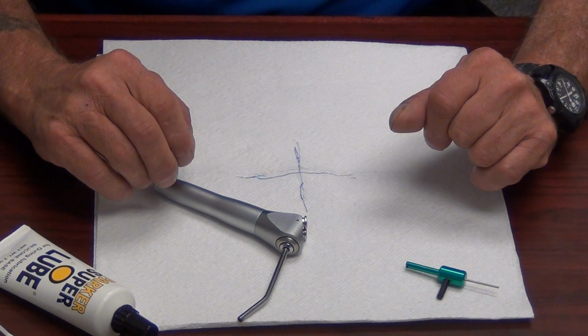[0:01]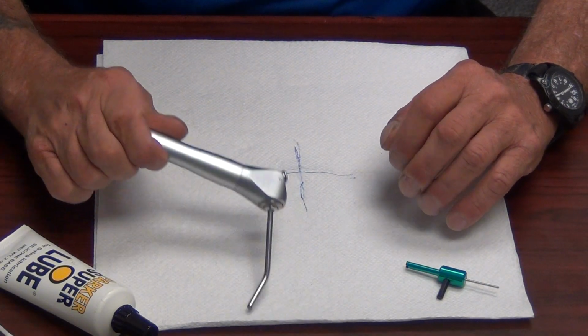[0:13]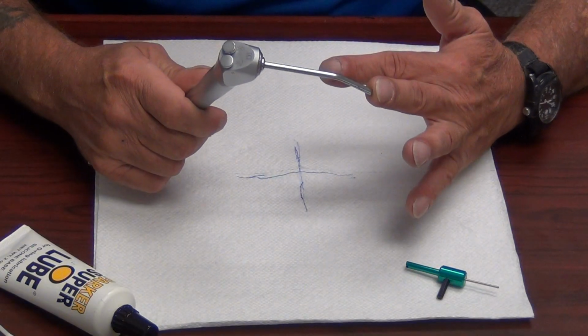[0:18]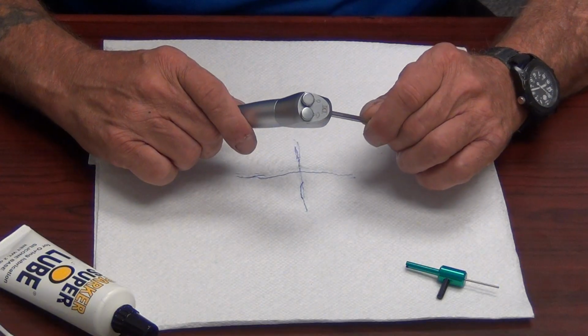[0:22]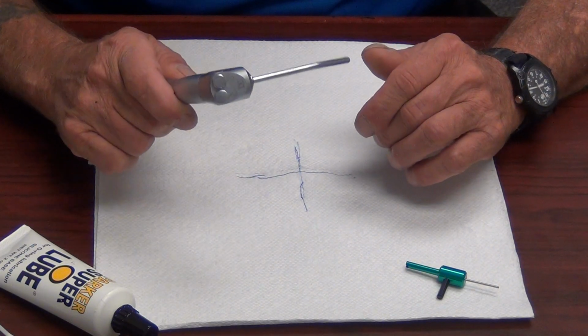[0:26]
Hey guys, today we're going to discuss the repair of the DCI syringe. DCI makes several syringes for several manufacturers, which means basically most of your syringe nomenclature is going to be the same, except for an A-dec syringe. We're going to do an A-dec syringe in a separate video. There are some unique characteristics of an A-dec syringe that are not characteristic of this syringe.
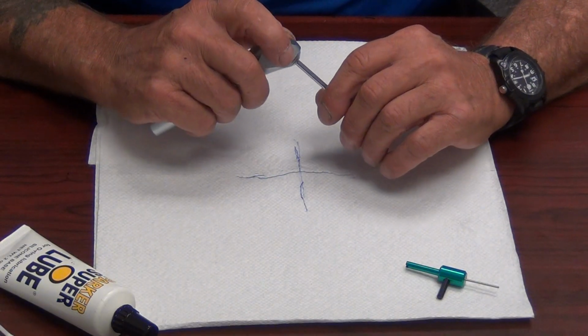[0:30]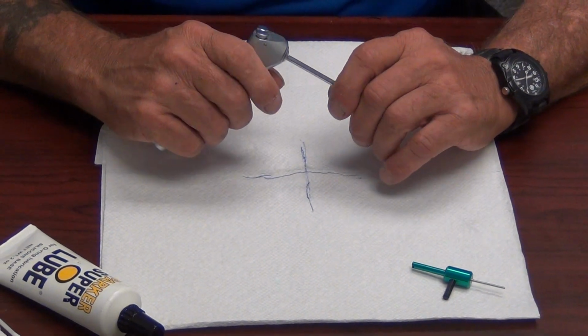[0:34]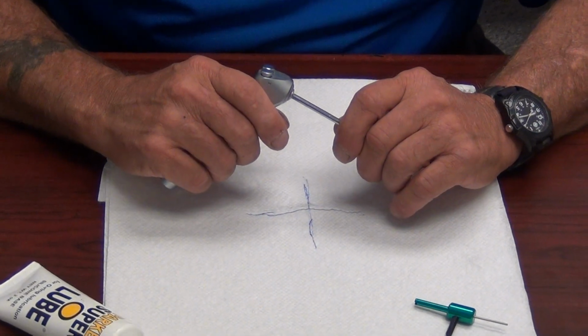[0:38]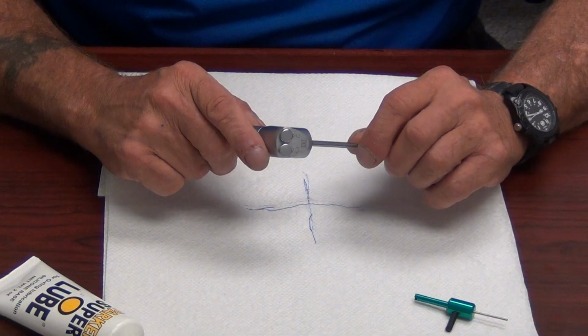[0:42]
This is important stuff, guys. I know technicians who have been doing it 10-15 years, and their syringe skills are severely lacking. I also know technicians who will not repair a syringe but sell a new syringe. If I was the doctor, I would not buy a new syringe when that syringe could be rebuilt. Actually rebuilding the syringe instead of replacing it is a good way to score some points with the doctor. The syringes are made to be repaired.
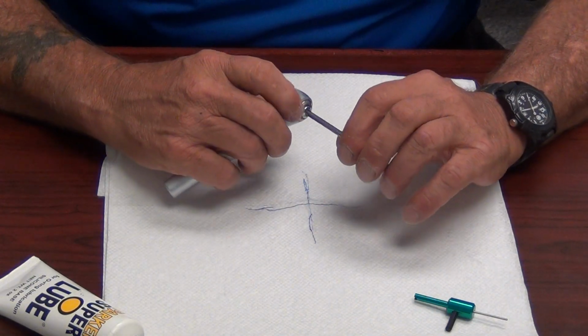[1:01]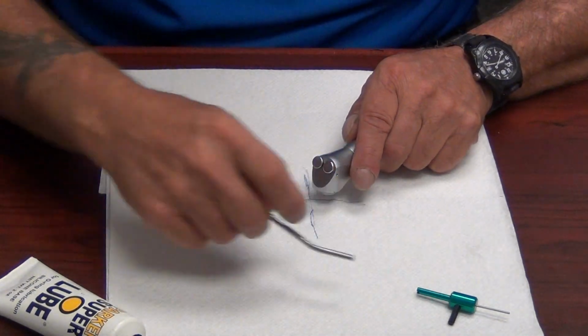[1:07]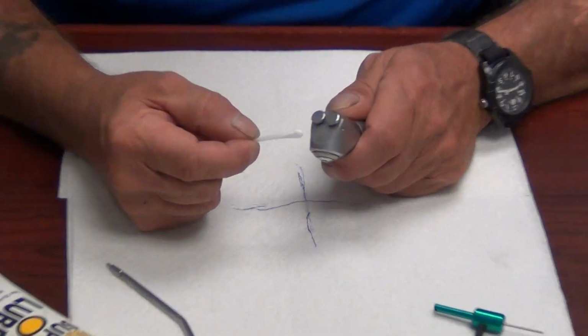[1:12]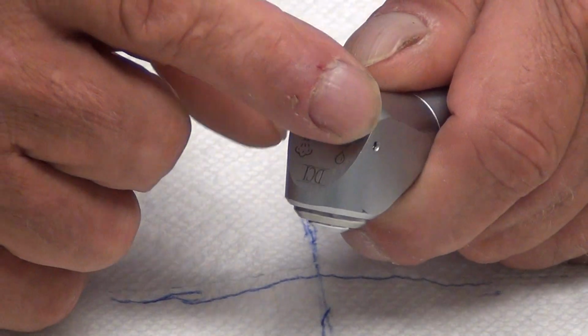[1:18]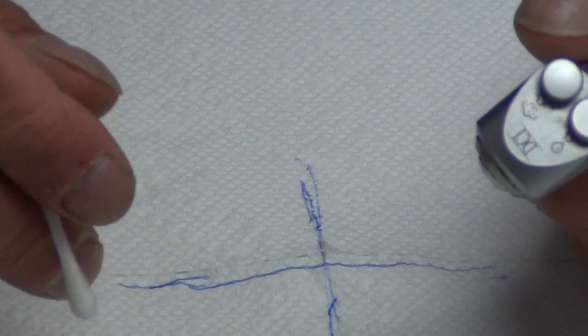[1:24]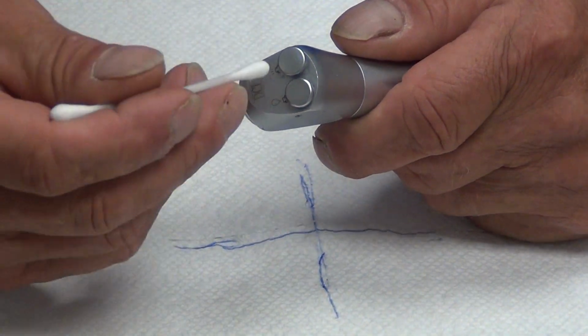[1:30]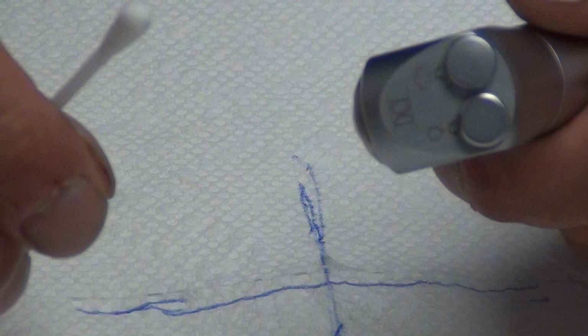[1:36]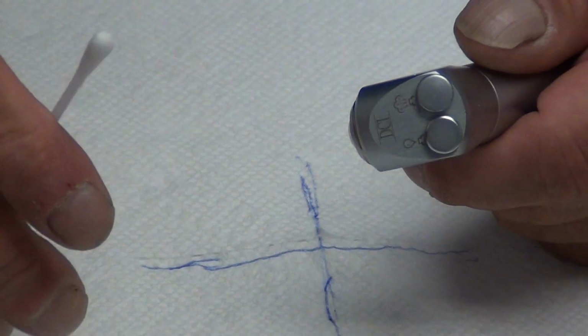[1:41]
The only indication that you cannot repair a syringe is to examine the head of the syringe closely. Look for any dents or dings in the head of the syringe, especially around the buttons, that could impede the buttons or make the buttons stick. If the syringe is dropped, which happens quite often, when they miss putting it in the hanger on the unit and it ends up on the floor, it will actually dent the head of the syringe. The dent will reflect in the button port and will make the syringe inoperable. That should be the only time you sell a new syringe. In case the doctor just out and out requests a new syringe, by all means put one on.
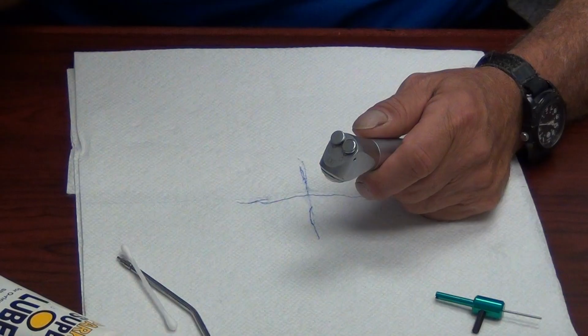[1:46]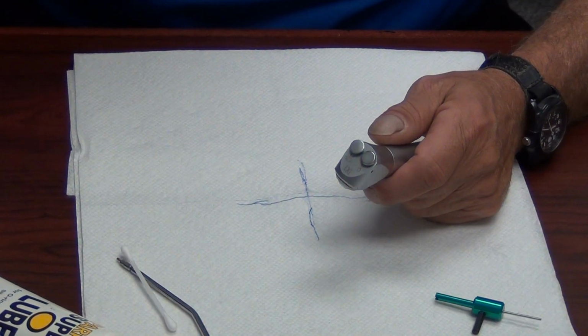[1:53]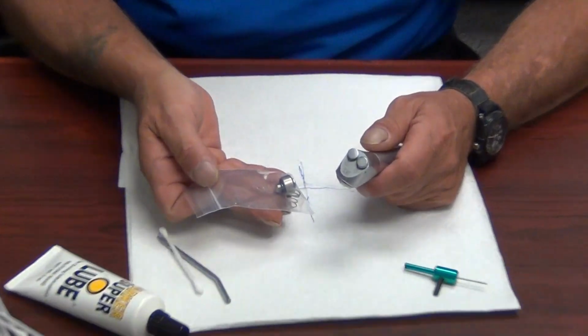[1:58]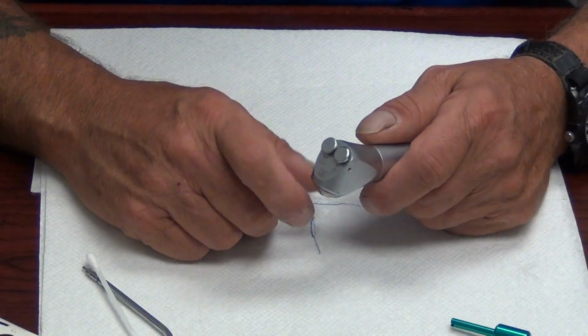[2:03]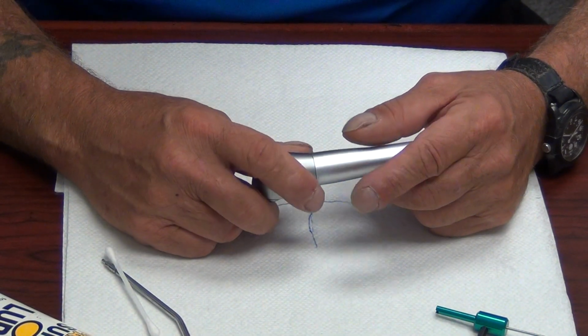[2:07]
You should stock some basic syringe parts: the syringe repair kit from DCI, which is part number 3066, and the Quick Connect tip holder assembly. These items should be stocked, guys. In the event that you don't have these when you have a free service to do, don't worry. If you've got a syringe in your truck on your delivery unit, you can actually use the parts off of that syringe to repair this syringe. So no need to panic.
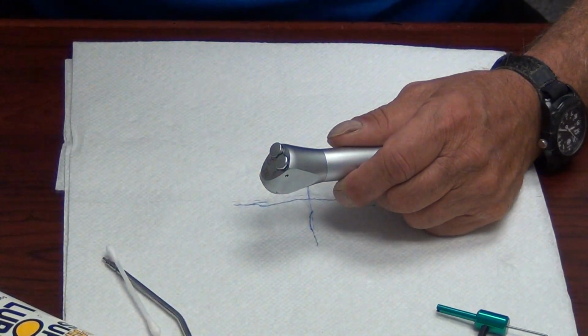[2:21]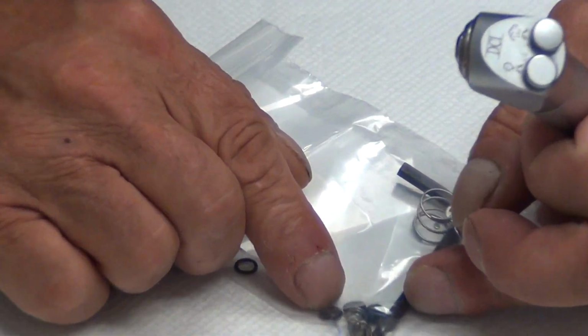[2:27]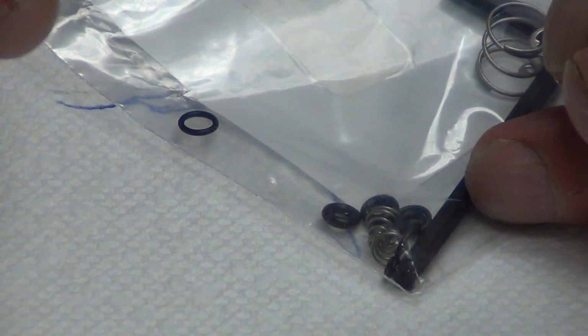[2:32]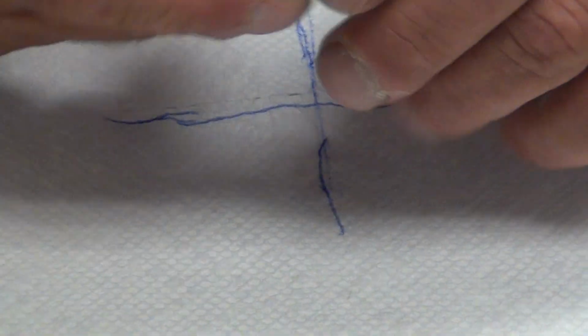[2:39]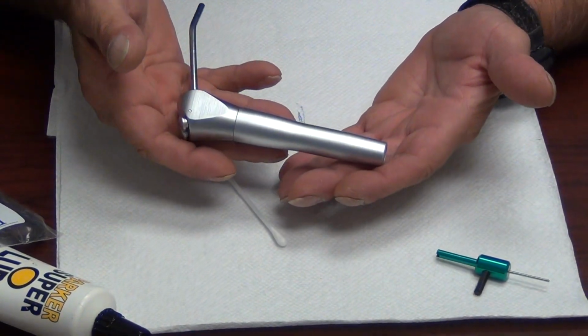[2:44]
Also, most of these O-rings, except for a few examples, are available in your DCI O-ring kit. Now, we're not going to get into the specifics of actually putting O-rings on the button. We're going to replace the cartridges and do it the basic thinking man's way. For convenience in the video today, we have already removed the syringe from the delivery system and left the tubing on the delivery system. There's no need to remove the syringe during your actual service. You can leave the syringe attached to the delivery system.
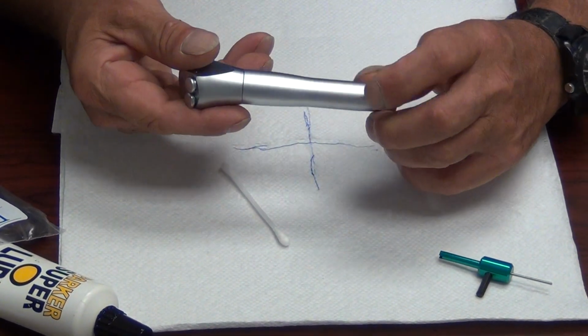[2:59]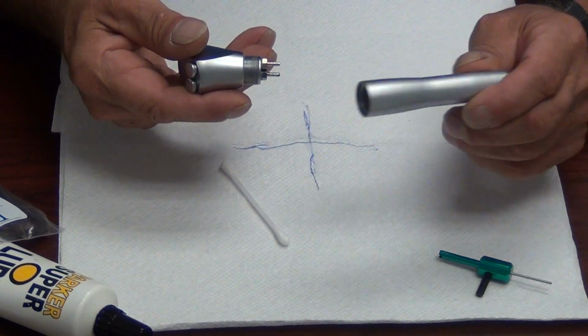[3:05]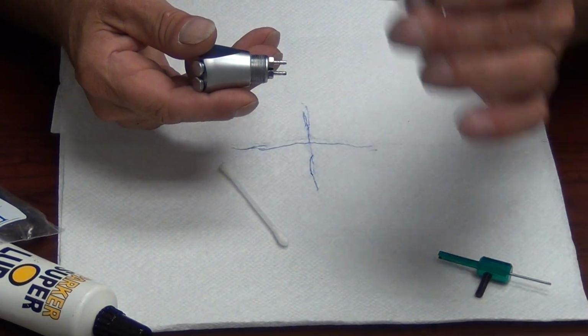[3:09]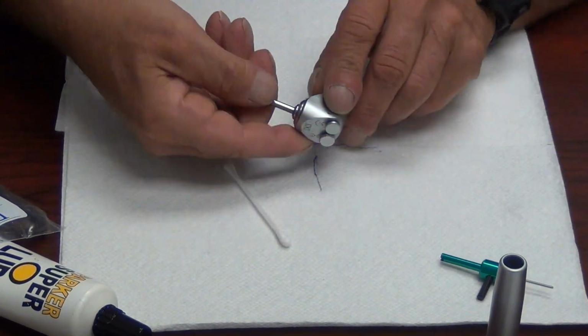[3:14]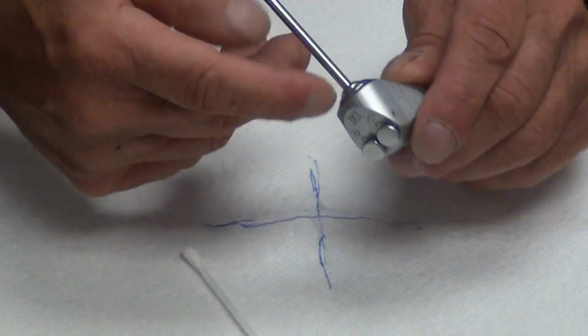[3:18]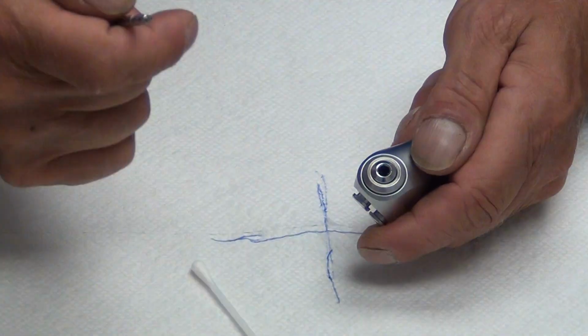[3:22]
First thing we're going to do is unscrew the handle. The syringe has definite parts. When you call me asking for help, please remember and make note of these parts so we can all be on the same page. This is the handle, obviously. This is the syringe head, for obvious reasons. These are the syringe buttons and the tip holder. Tip holder, not the tip.
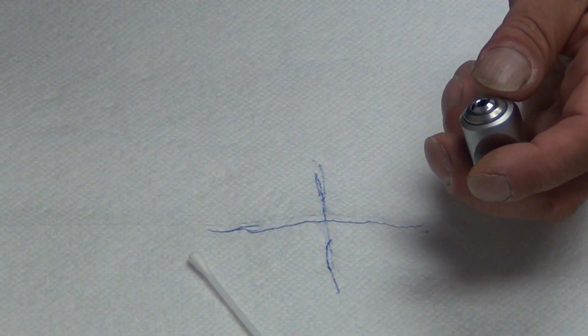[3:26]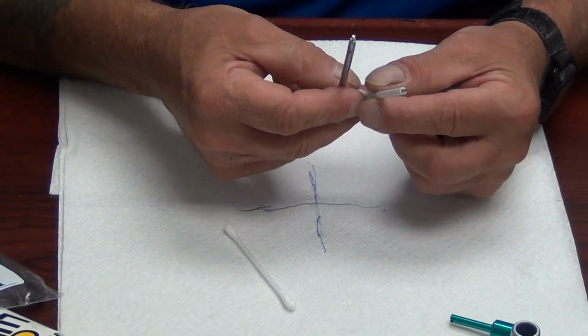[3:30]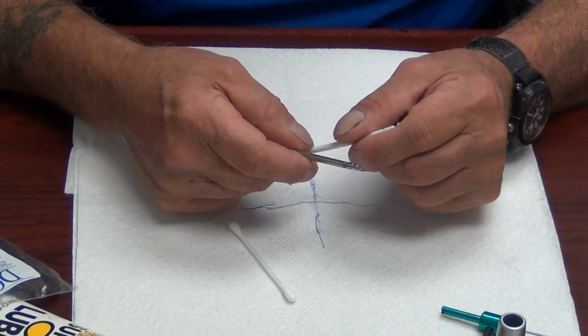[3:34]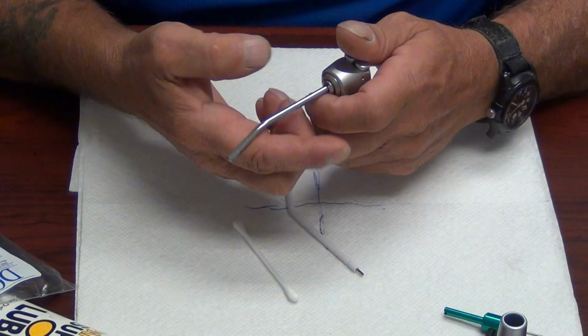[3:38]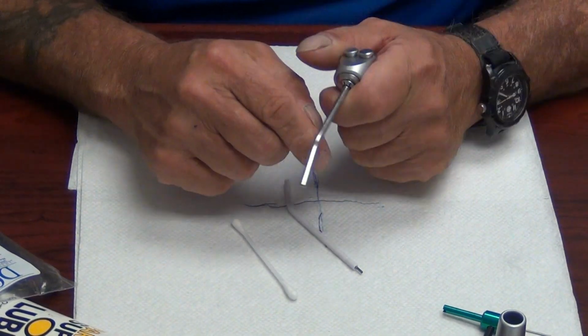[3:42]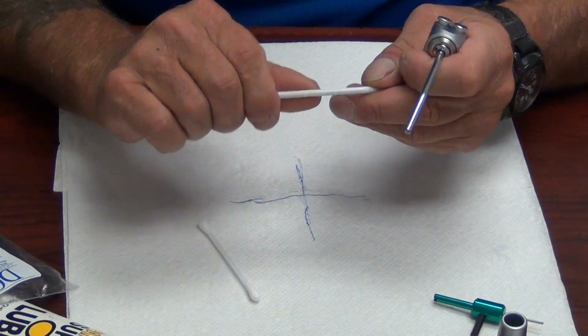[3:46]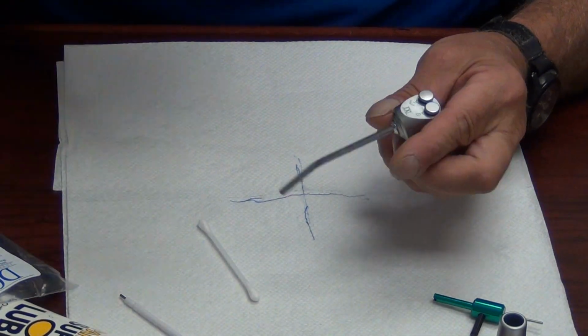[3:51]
This is a tip. You'll see a couple of different kinds of tips: plastic tips and metal tips. Both are acceptable. A plastic tip does not perform as well as a metal tip because the doctor and the hygienist use the tip to retract the cheek, gum and lip while they're doing the procedure. Plastic doesn't offer that much rigidity to retract with. So we're going to remove the tip and set the tip aside.
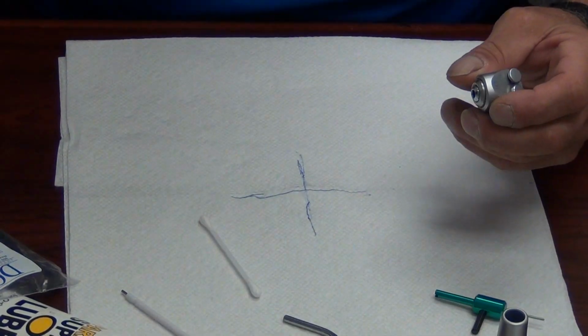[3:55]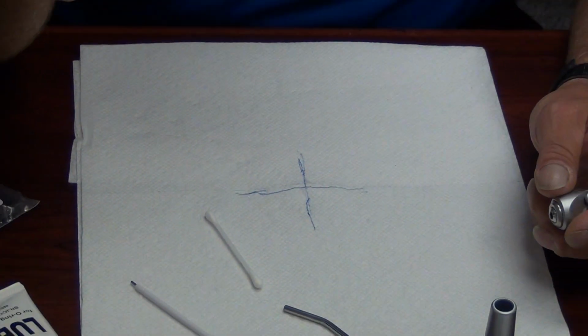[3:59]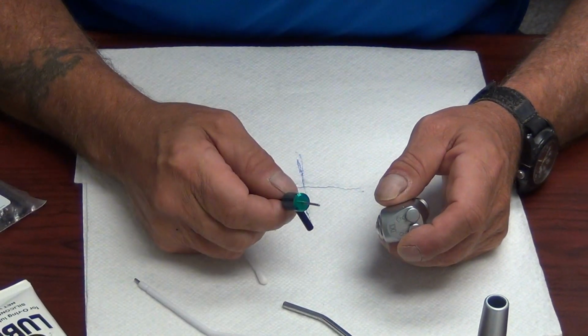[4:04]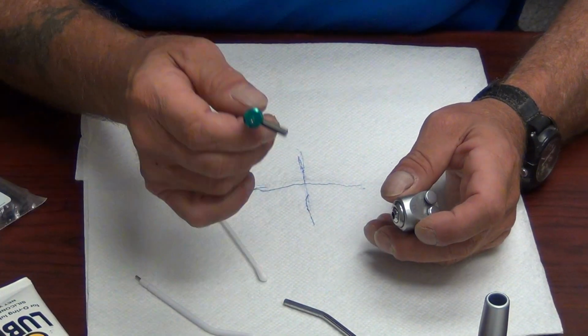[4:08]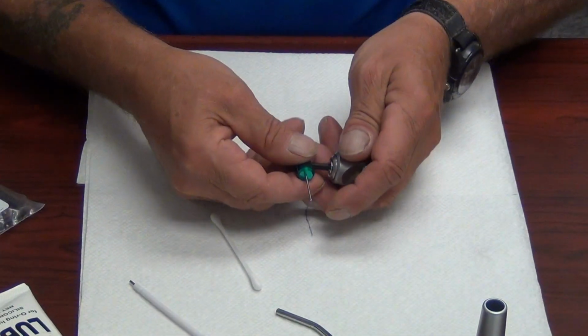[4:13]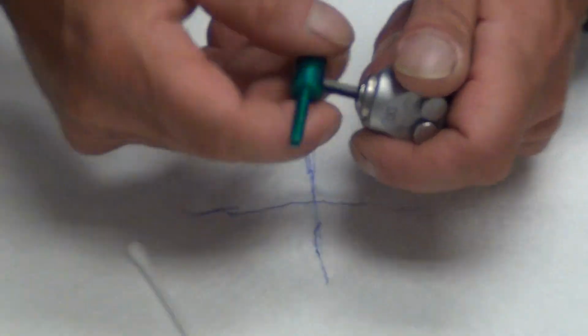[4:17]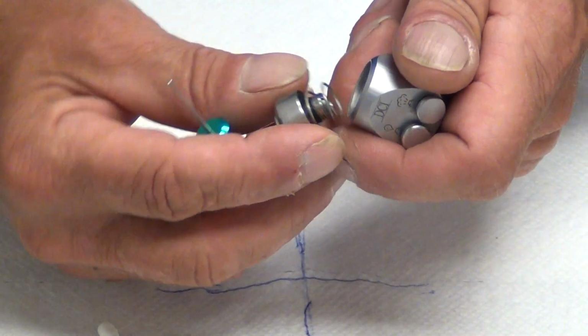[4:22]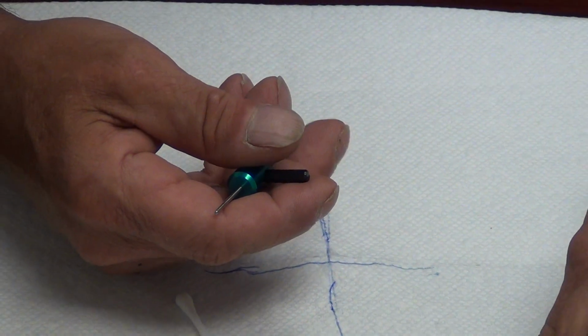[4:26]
We will get our syringe tool, which is available from DCI. It's part number 9287. This is an indispensable syringe tool, guys. You really need this. With the Allen wrench attachment on the front, we're going to remove the tip holder. Counterclockwise, we're going to unscrew very gently and set the tip holder aside with the retainer spring.
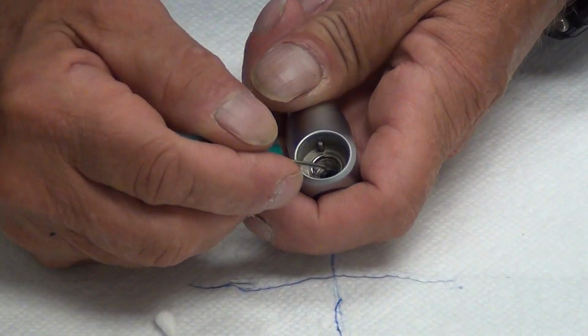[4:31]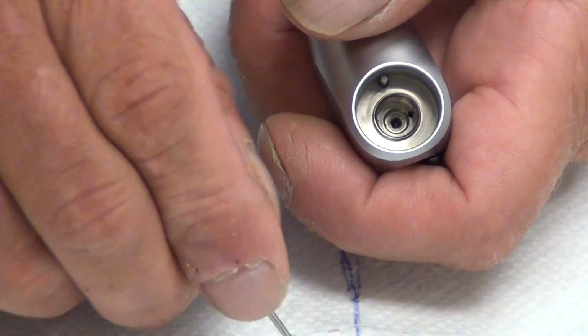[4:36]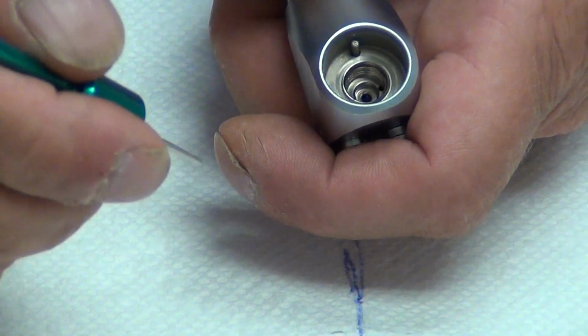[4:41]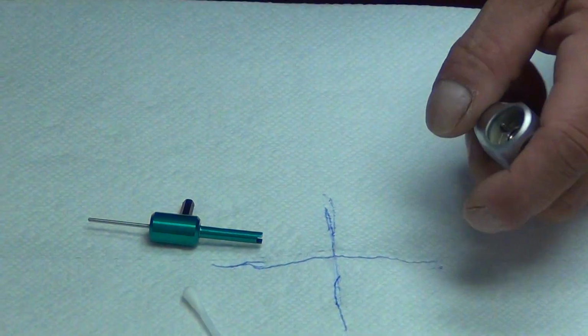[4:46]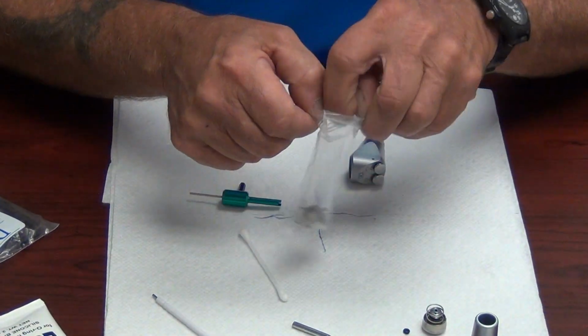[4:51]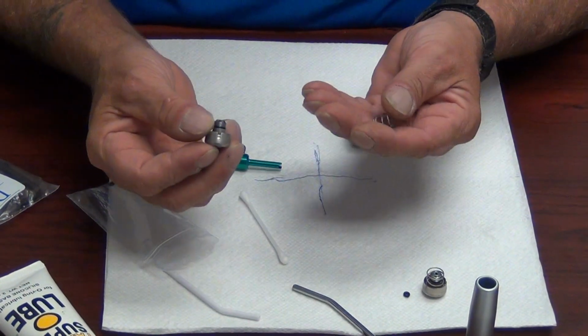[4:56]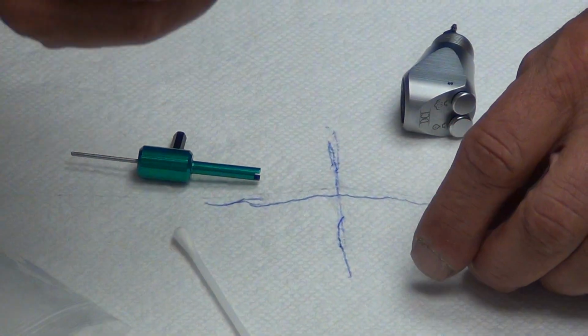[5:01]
As you look into the inside of the syringe, there's a small O-ring, as illustrated, that fits into an indentation. This O-ring is very important when reassembling the syringe, guys. We'll take our new tip holder. The O-rings aren't replaceable in the tip holder itself, by the way, guys. You have to replace the whole tip holder when you have this type of syringe.
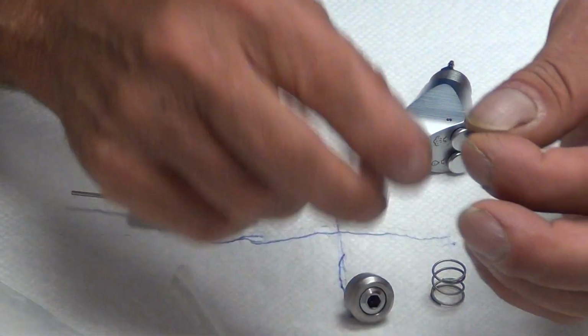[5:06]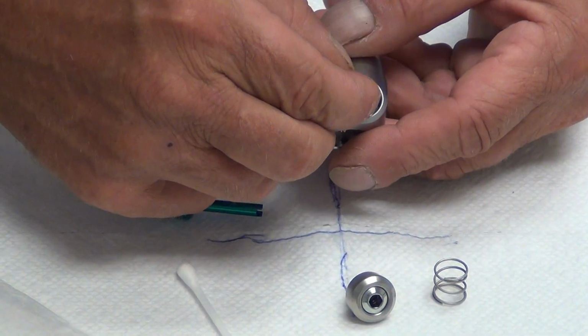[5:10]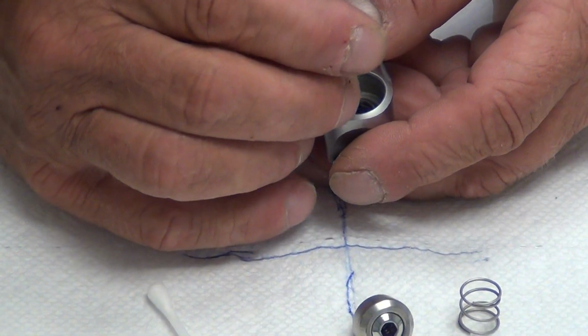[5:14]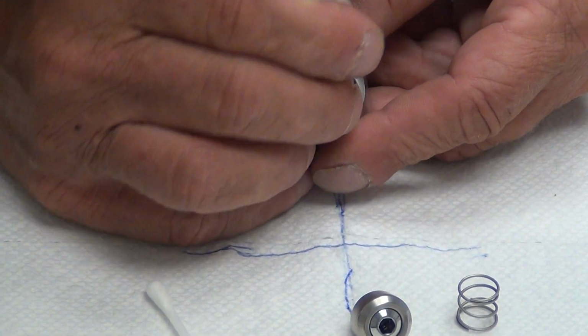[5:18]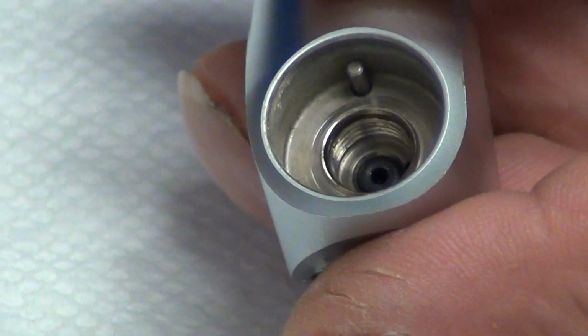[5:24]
Taking your O-ring that comes with your new syringe holder, drop it down into the syringe using the blunt end of your syringe tool. Press it down into the orifice as so. Make sure you get a good press on it. You can use your Q-tips. Guys, have some Q-tips laid out.
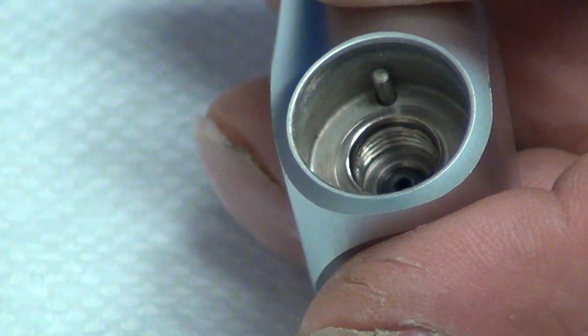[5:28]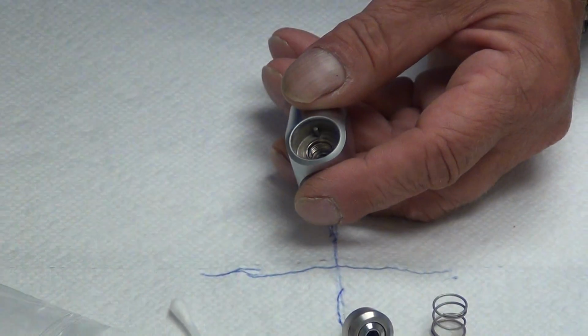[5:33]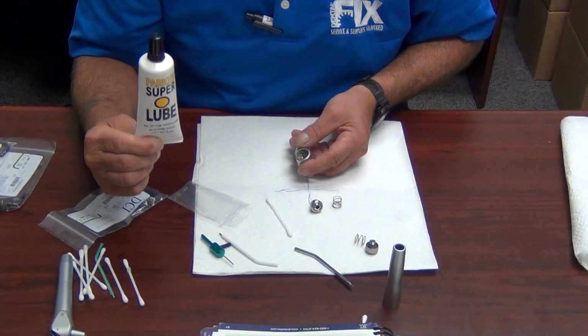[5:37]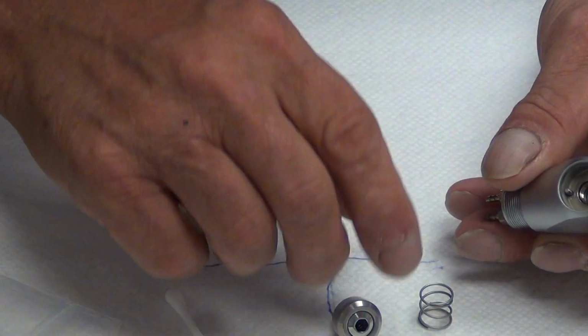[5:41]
And also some O-ring lube. Do not use Vaseline. Do not use lithium grease. Do not use silicone grease. Use O-ring lubricant only. We've replaced our O-ring. This is a very important part.
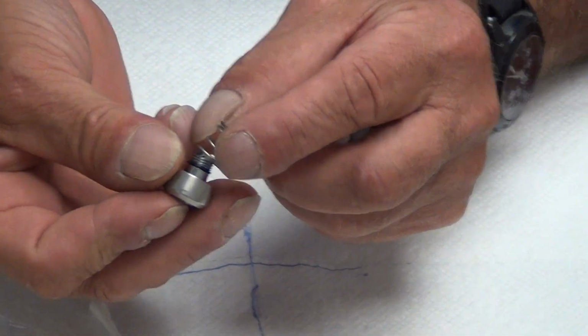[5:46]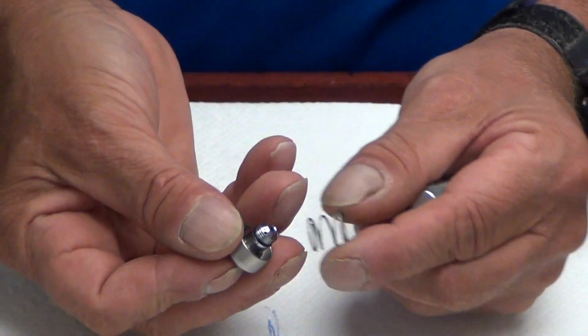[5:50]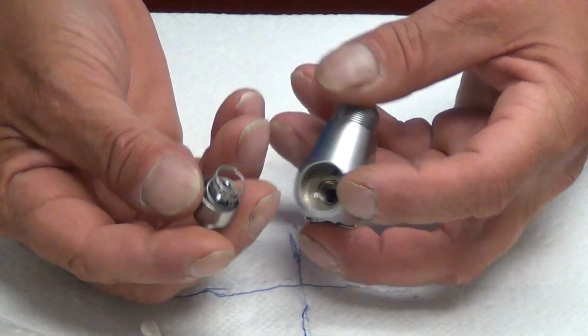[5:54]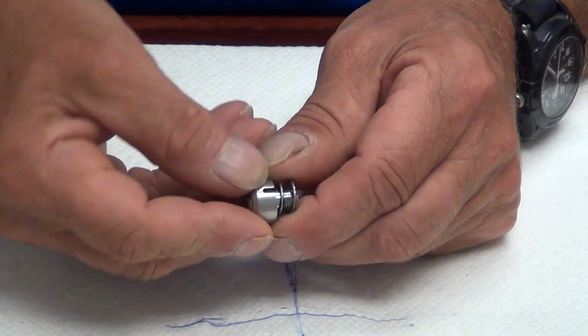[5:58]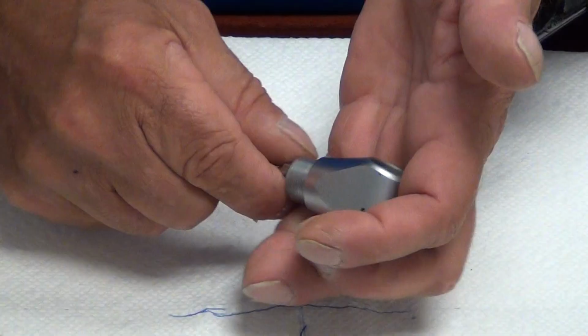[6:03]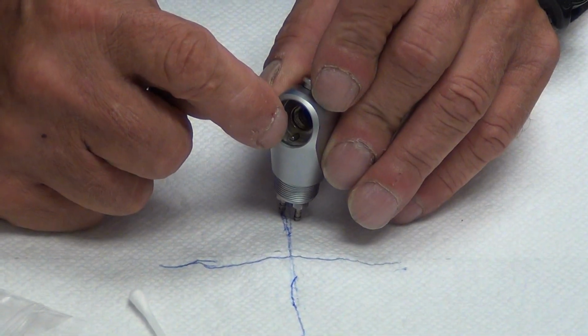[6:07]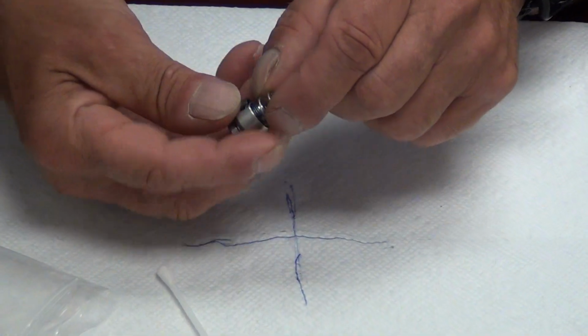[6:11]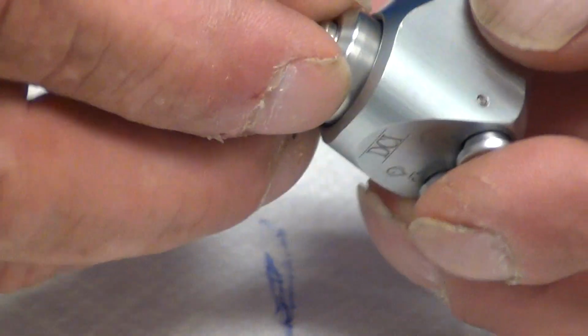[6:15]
Make sure your spring is inside of the new tip holder and collar assembly, like so. You'll see a notch in the new tip holder assembly. A slight cutout is illustrated right here. And you'll also see a post coming out in the syringe. This notch must align to that post, which is at a 6 o'clock position.
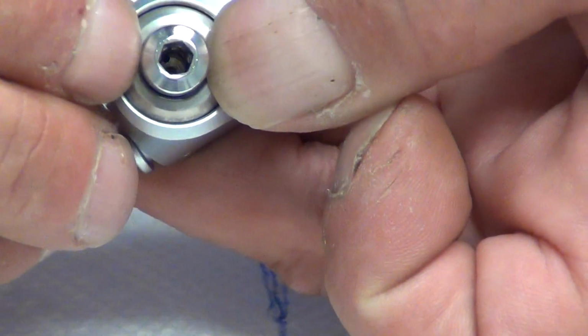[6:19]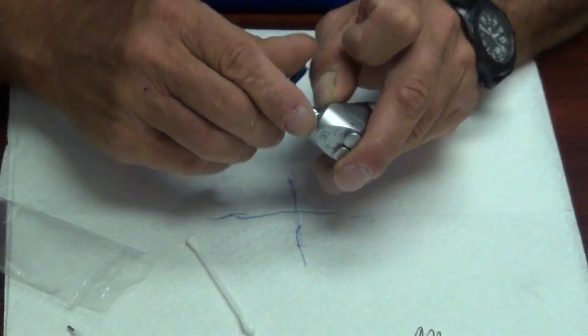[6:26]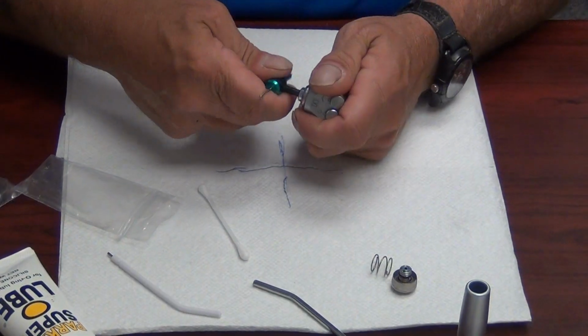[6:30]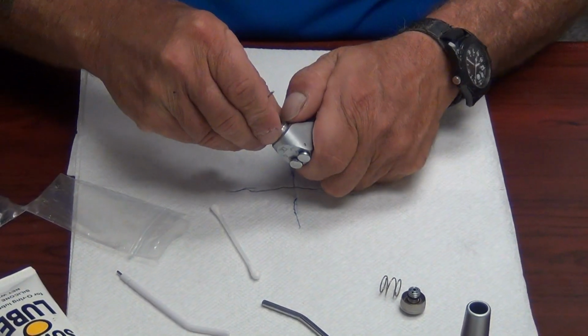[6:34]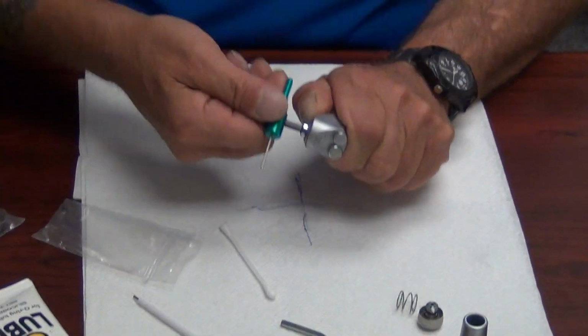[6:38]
So doing that, we will retract the outer ring, take our tool, and being very careful while we're retracting that, we are starting straight and not cross-threading. If we cross-thread this, the guy does have to buy a new syringe. We'll tighten it down securely.
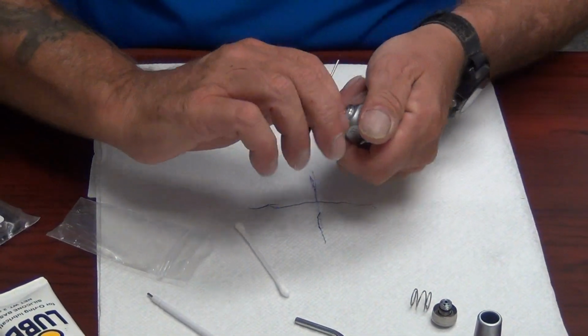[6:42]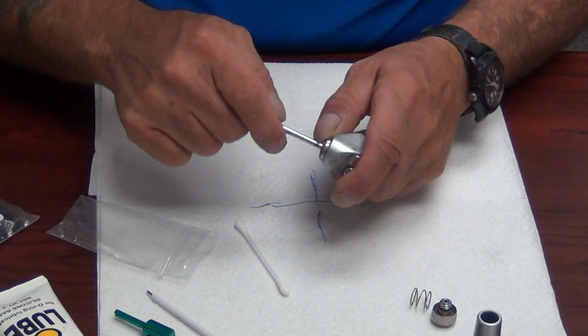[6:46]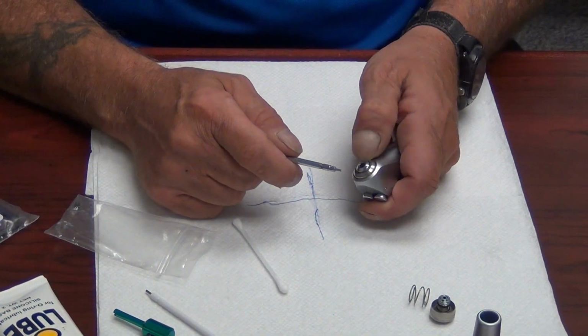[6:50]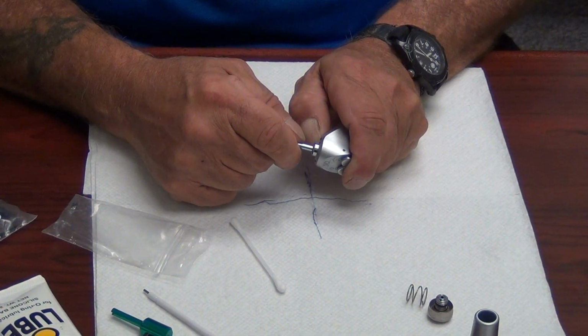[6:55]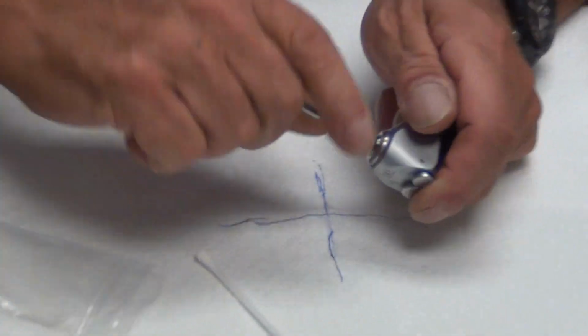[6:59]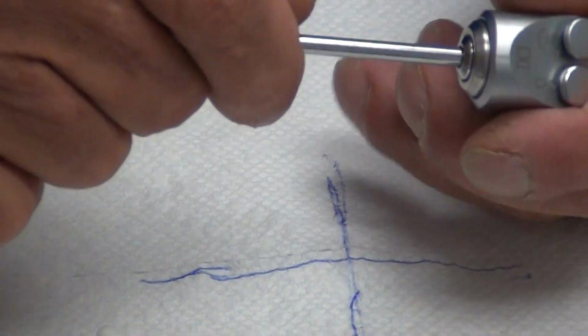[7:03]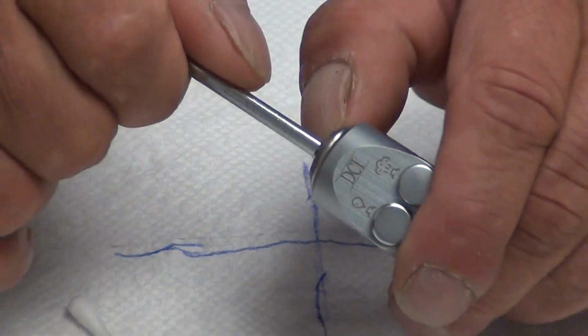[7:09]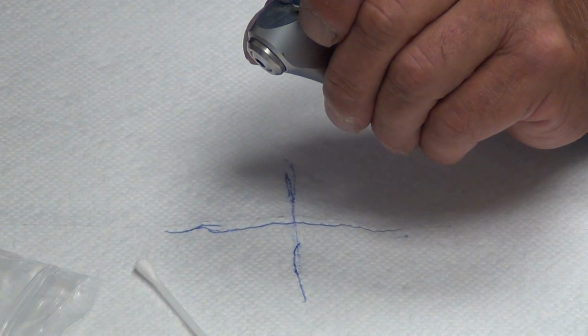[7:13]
Reinstall the tip. Guys, to install the tips on these, you push the outer ring like so. Put the tip in till it snaps. Release the outer ring, swivel the tip 360 degrees. And the tip process is completed on the syringe rebuild. We'll remove the tip again and concentrate on the buttons.
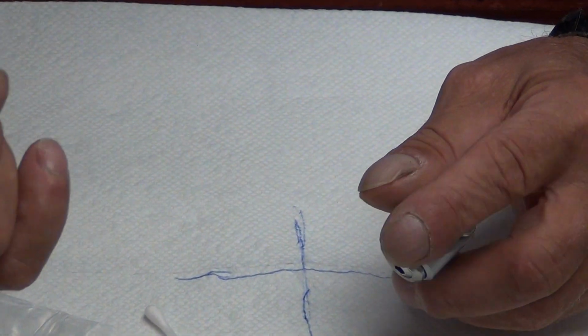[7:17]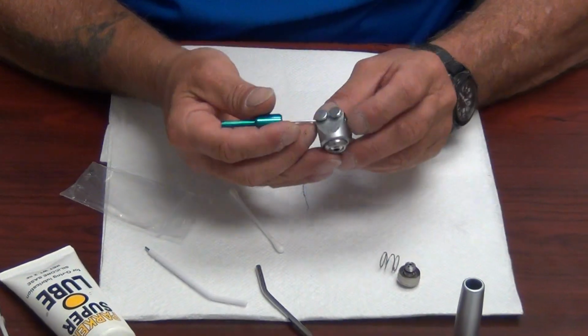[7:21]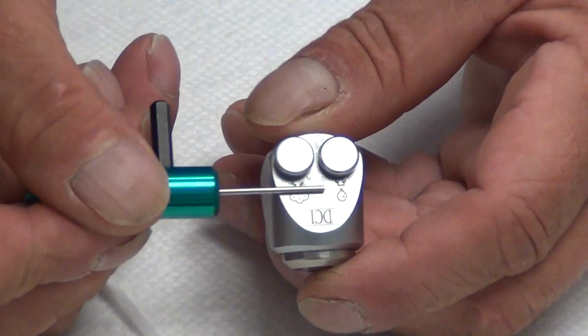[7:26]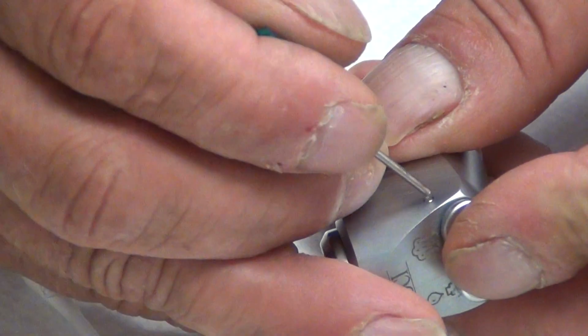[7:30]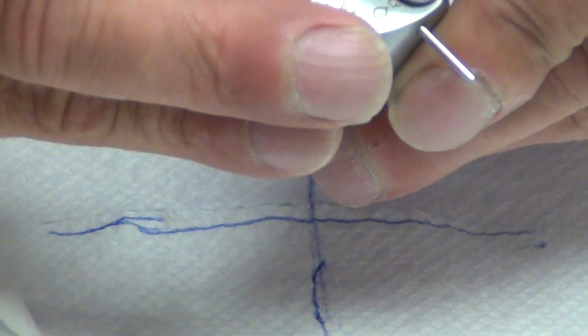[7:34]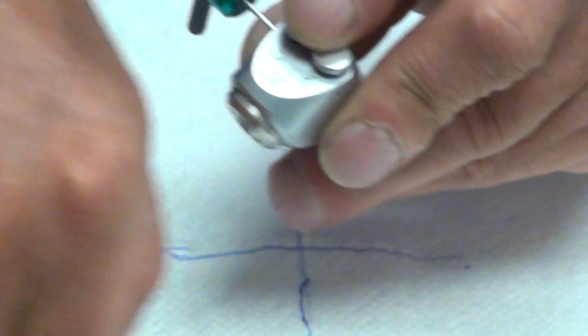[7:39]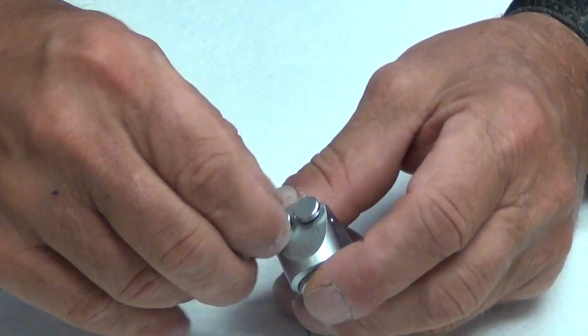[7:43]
Again, we have our handy dandy DCI syringe tool. These syringe buttons are retained in by means of a pin like so that goes through the syringe and holds the cartridges or the buttons in. So what we're going to do is extract the pin. If you'll notice, our tool has the exact right size to extract the pin, and lay the pin aside and pull our tool back out, starting with one button at a time.
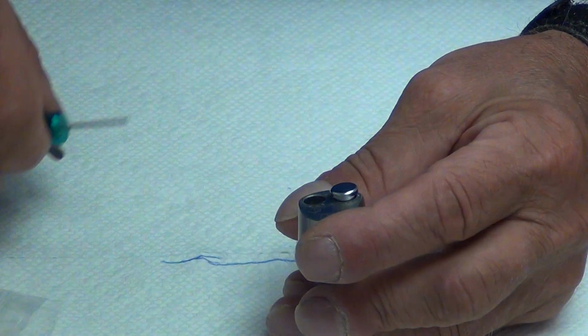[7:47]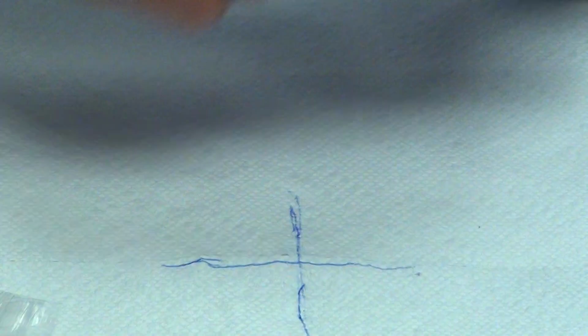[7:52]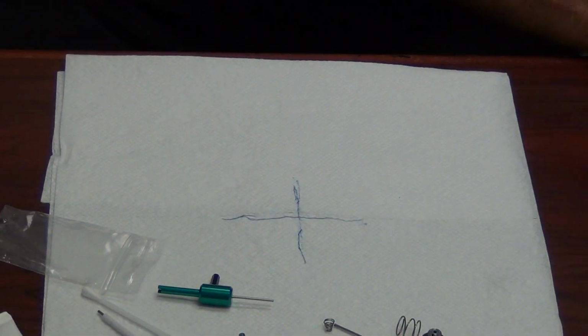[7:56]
We will remove the button and the spring and set them aside. Sorry guys, I had a button get away from me. It'll get away from you too, so be careful.
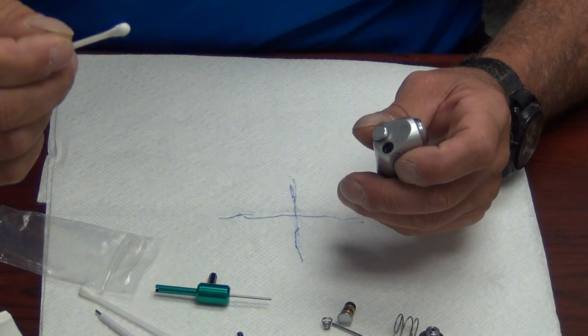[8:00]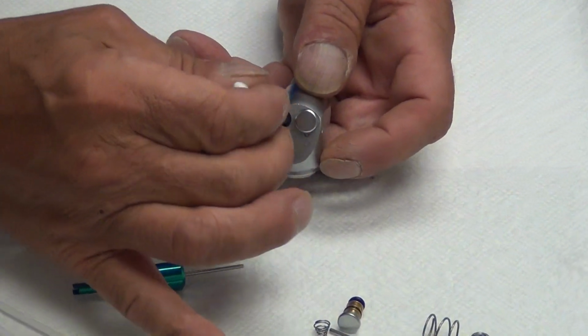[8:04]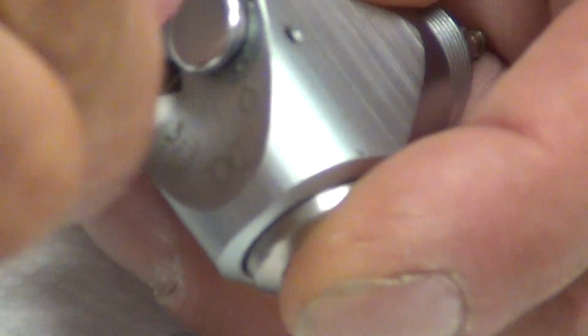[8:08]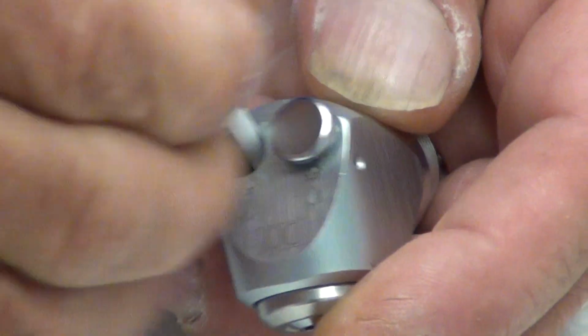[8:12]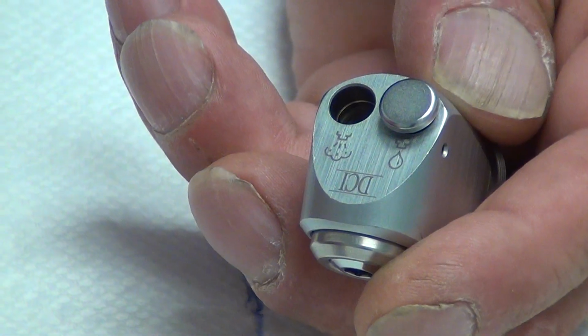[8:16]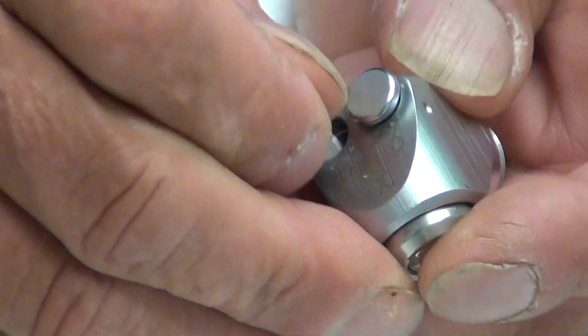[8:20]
Now with our Q-tips, we want to clean the syringe port. Give it a nice scrubbing and wipe down, because disinfectants get in here. See, disinfectants, debris, glove dust, any number of things can get in the syringe.
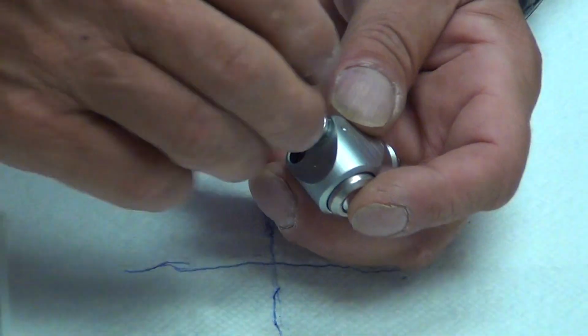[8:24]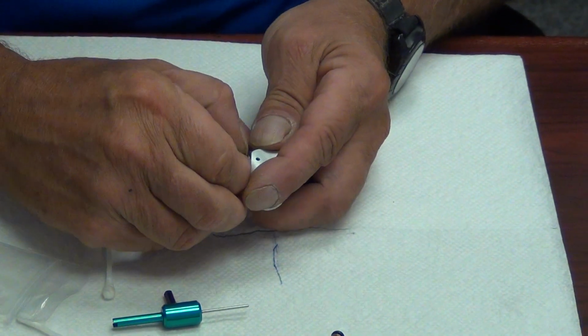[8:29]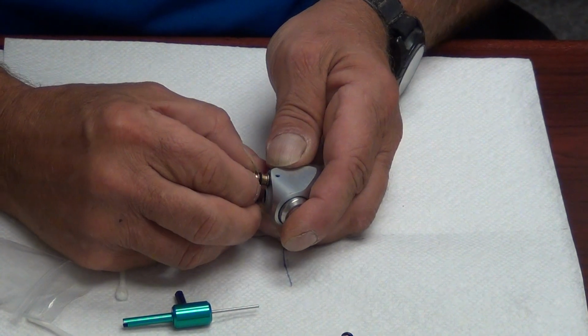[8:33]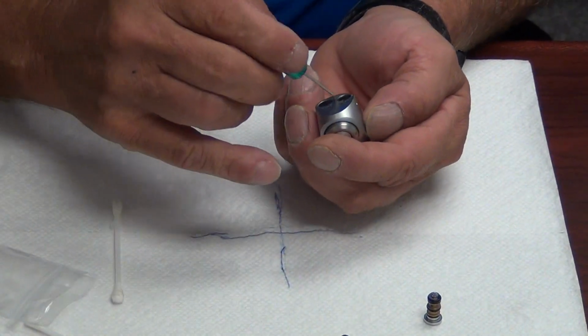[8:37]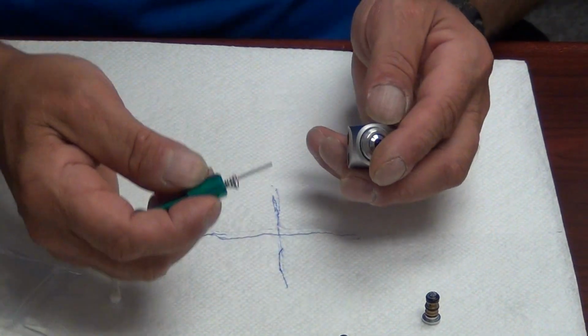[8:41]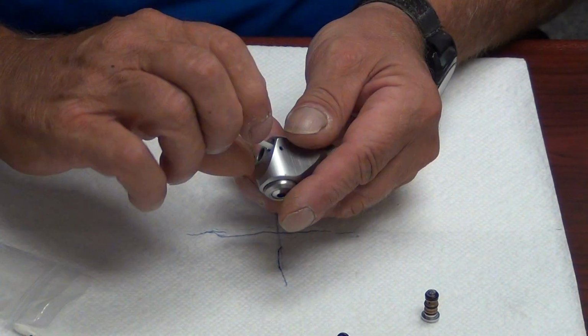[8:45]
We're going to remove our second button and set it aside. Very gently, luxate, and pull. Set it aside, and we're going to remember to remove our conical spring, and we're going to repeat the process on the water side.
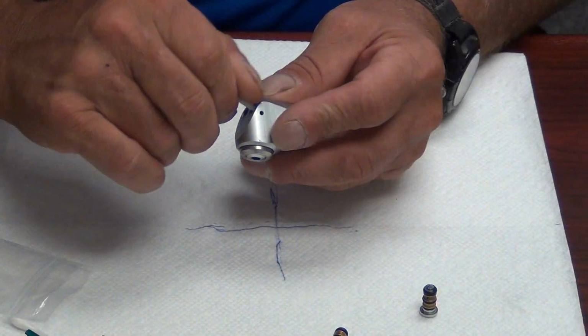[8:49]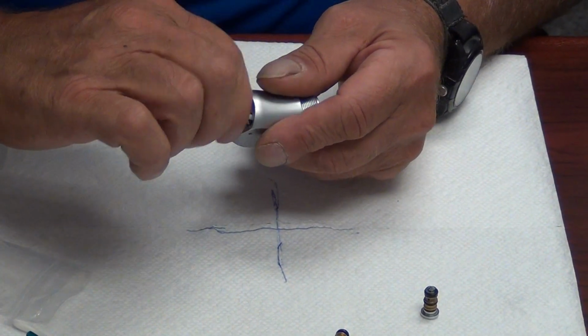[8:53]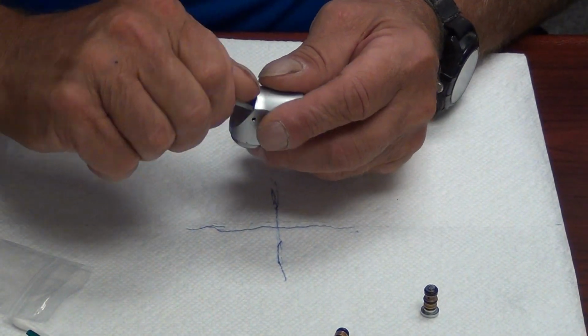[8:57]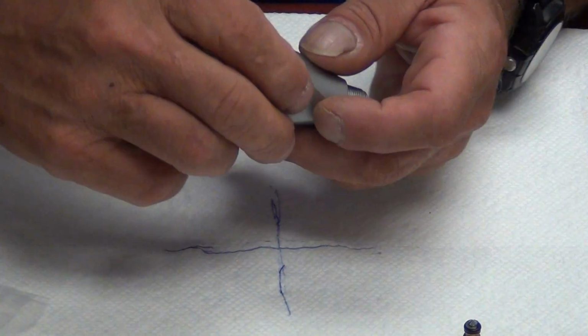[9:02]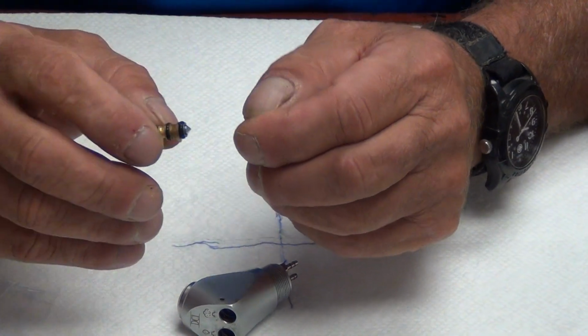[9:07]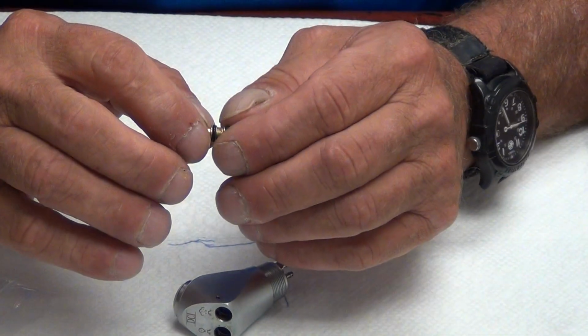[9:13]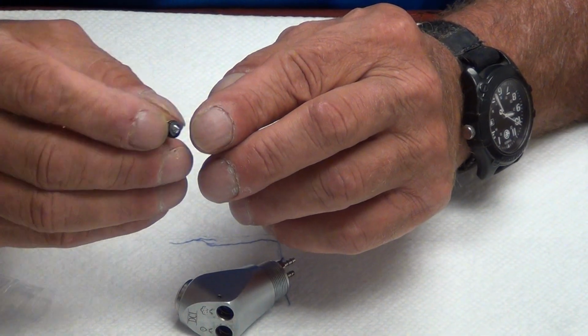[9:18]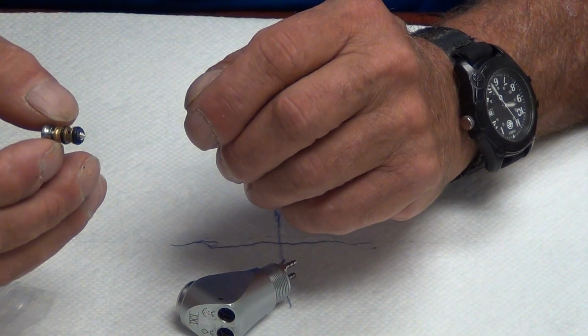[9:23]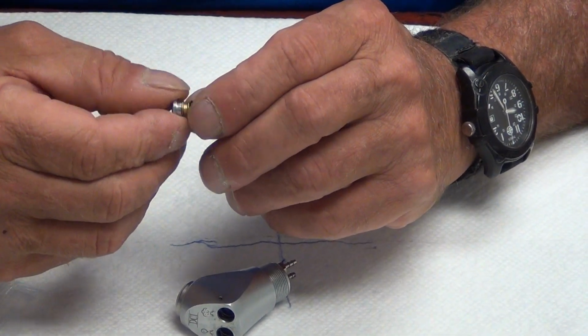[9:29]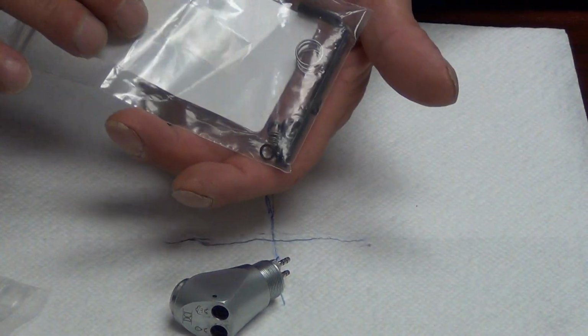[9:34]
Now we're ready to replace the cartridges. Ladies and gentlemen, the cartridges can be rebuilt using O-rings. You're going to add about 15 to 20 minutes after you're familiar with the procedure. At the start, you're going to add about 30 minutes onto it when you press these new O-rings on. So you can buy the entire button, which is part number 3625 from DCI, and replace the entire button. Is the easiest way to do it. They come in a repair kit. They have an Allen wrench, a spring, the whole 9 yards.
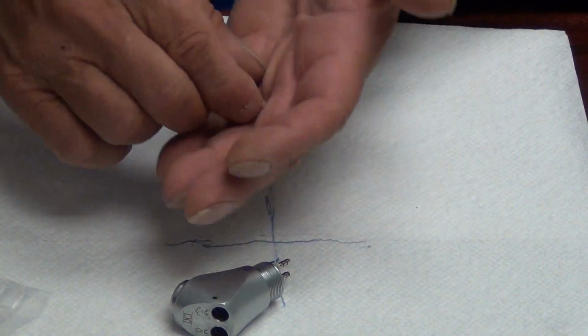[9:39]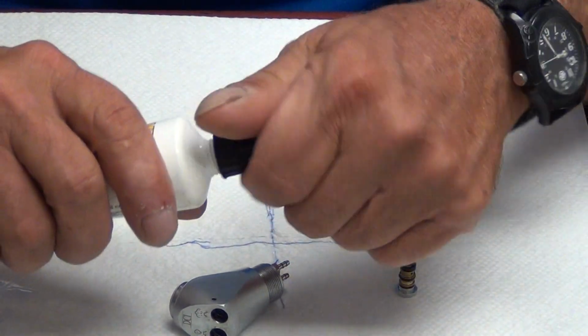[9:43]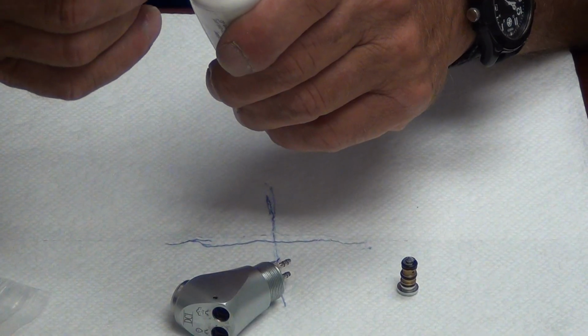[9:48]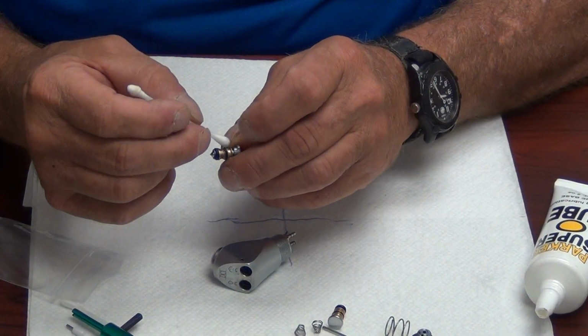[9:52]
Before we replace the syringe buttons, we're going to put just a little dollop of lube on them. We're not going to go nuts. Just a little bit will do. Top O-ring, bottom O-ring. Get a good thorough coating on them, but a thin coating.
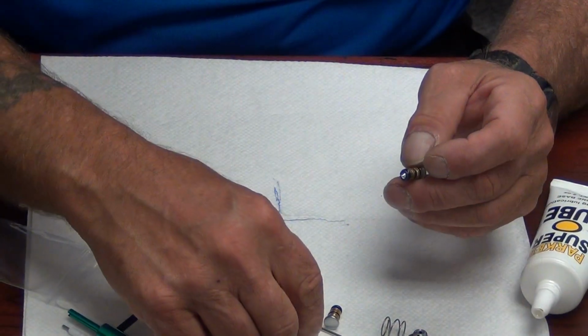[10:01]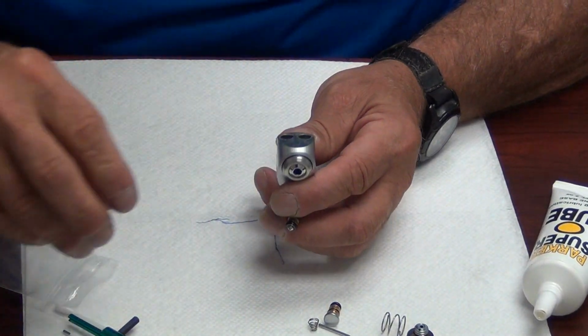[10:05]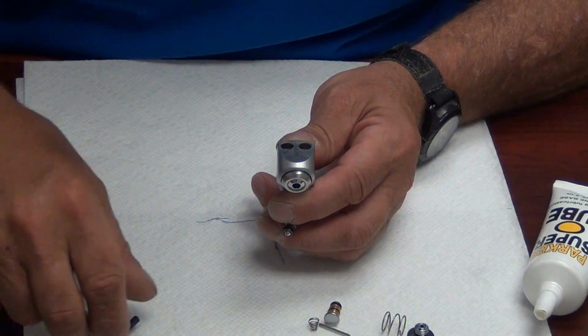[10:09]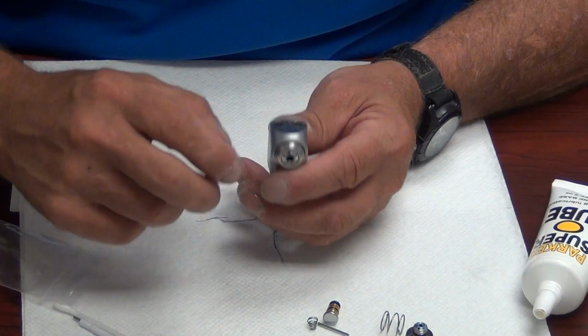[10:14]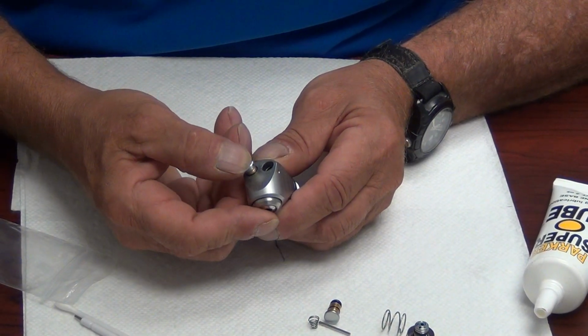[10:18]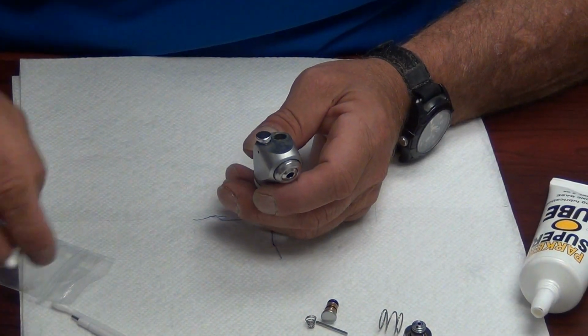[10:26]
Okay, we will take our new springs, drop the spring into the port, look down, tap it, make sure it's seated correctly. Then we replace the button. Being gentle, aiming right for it, push down thoroughly until you get good retraction and good spring back. Okay? We're going to repeat the process for the water side.
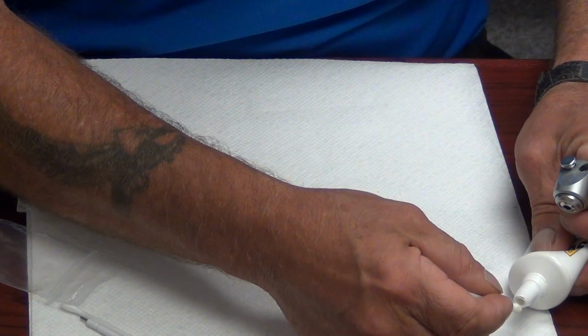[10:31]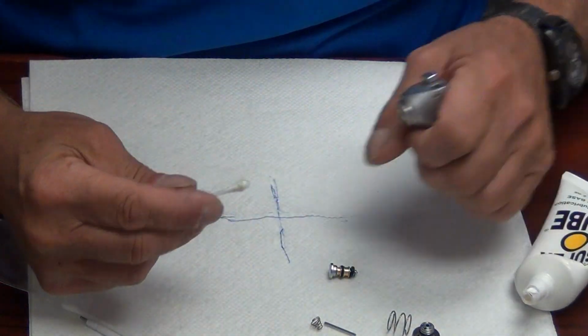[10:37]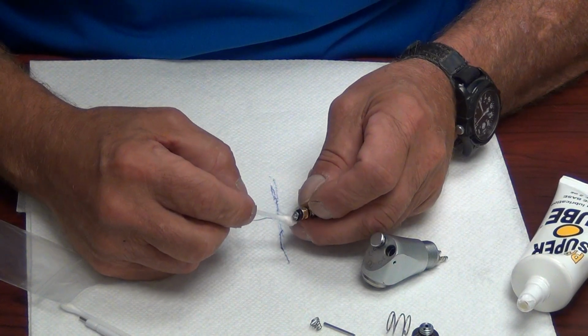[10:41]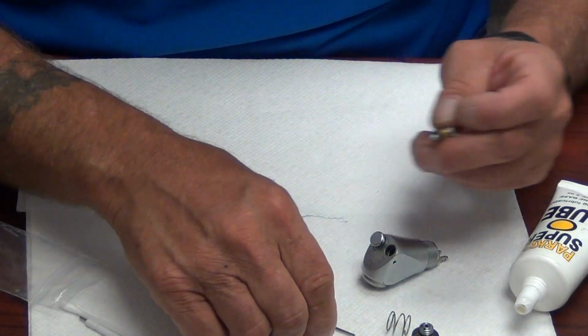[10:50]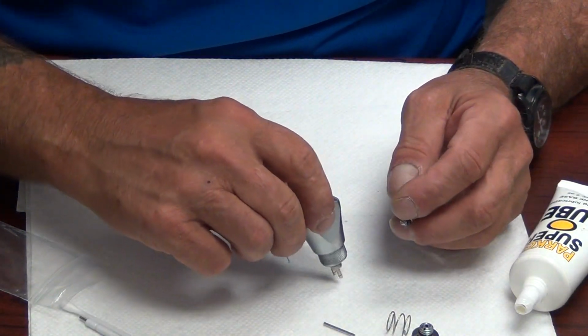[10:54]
Remember guys, O-ring lube only. You can buy it in small packets from DCI if you don't want to buy the whole tube. I suggest going ahead and getting the whole tube. You can get it from RPI or DCI through us, parts at dentalfixrx.com. I suggest getting the whole tube because you'll use these on every O-ring. Every O-ring needs to be lubed when it's installed.
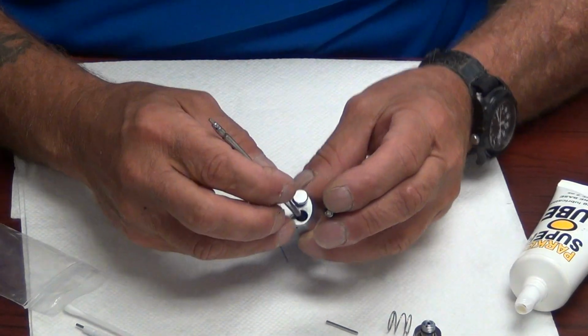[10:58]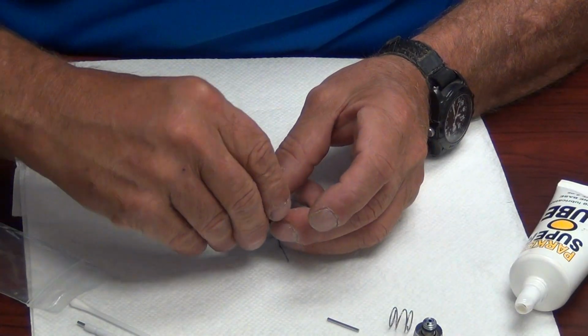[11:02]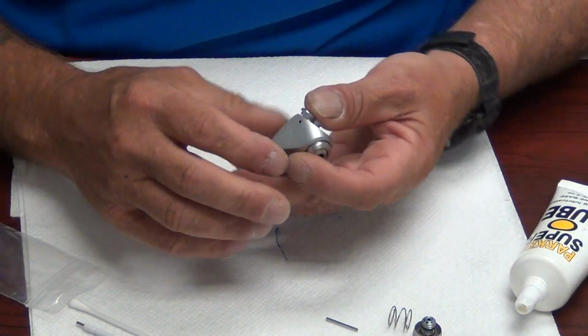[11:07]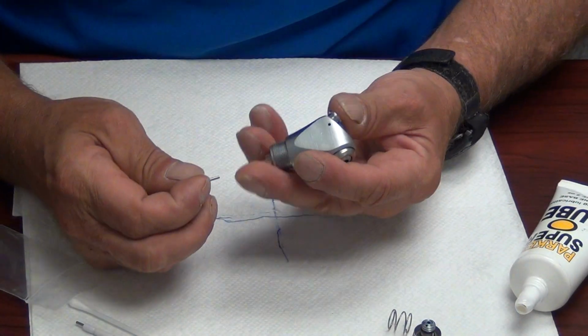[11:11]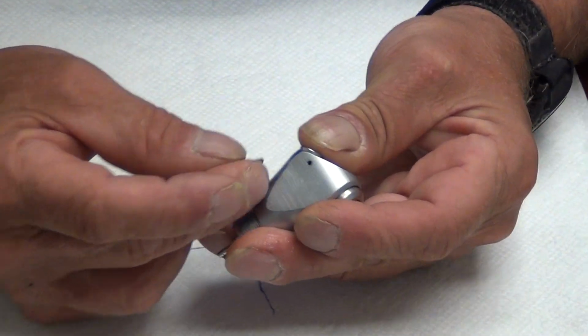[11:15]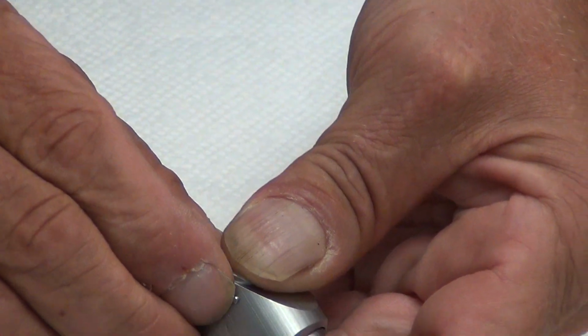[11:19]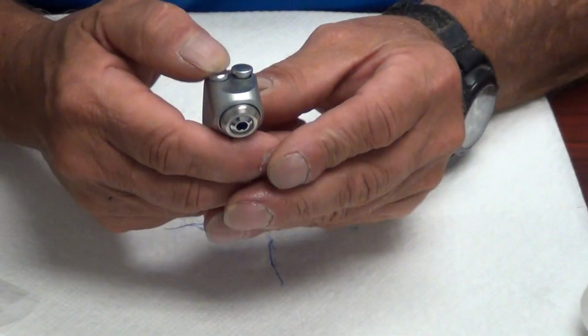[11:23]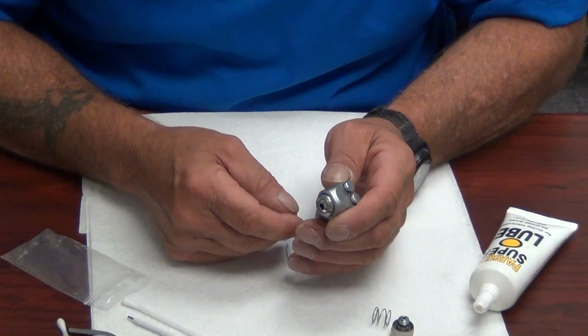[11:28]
We're seating our button and we're installing our button on top of our spring. This is very important, the next step, guys. Watch closely. You want to fully depress both buttons. Fully depress both buttons till they bottom out. Then replace your pin. Let your buttons up. Check your buttons for springiness and resiliency, and they feel wonderful.
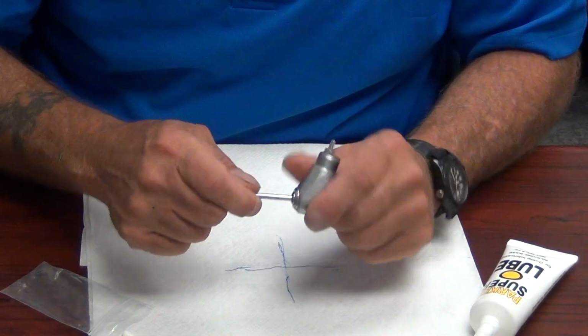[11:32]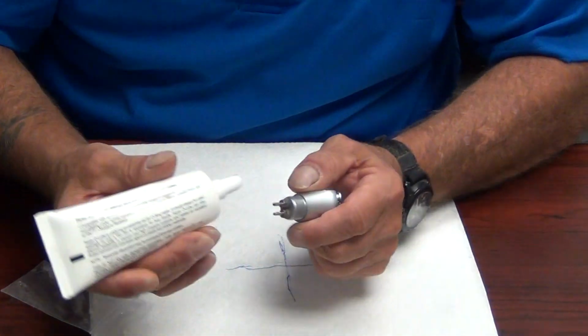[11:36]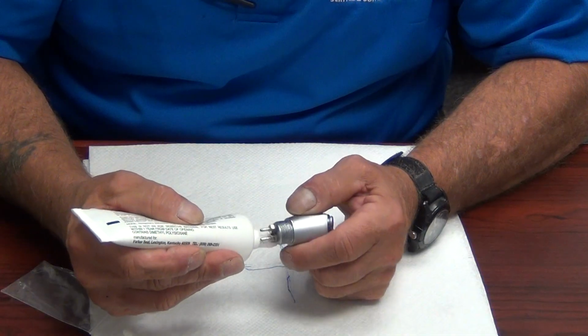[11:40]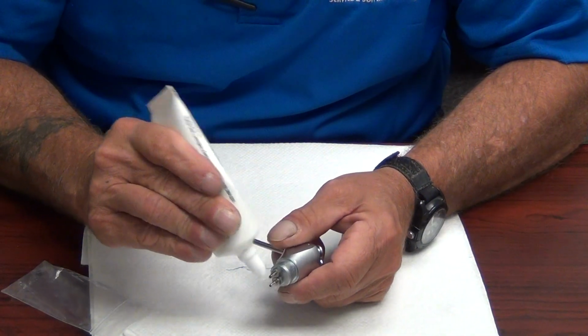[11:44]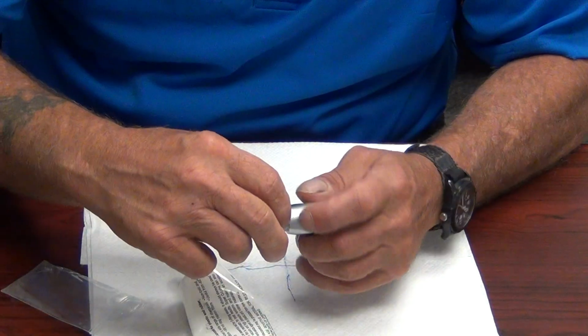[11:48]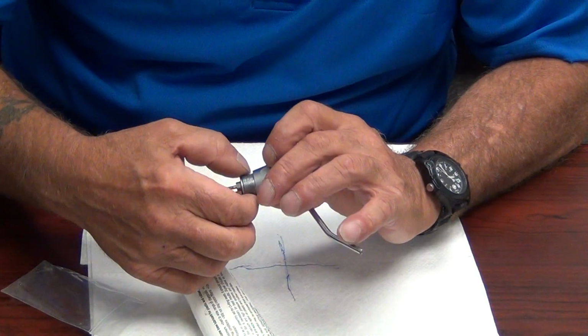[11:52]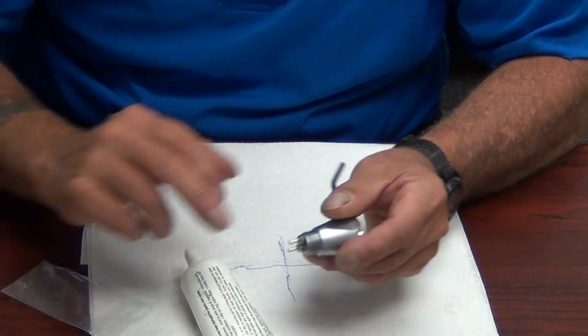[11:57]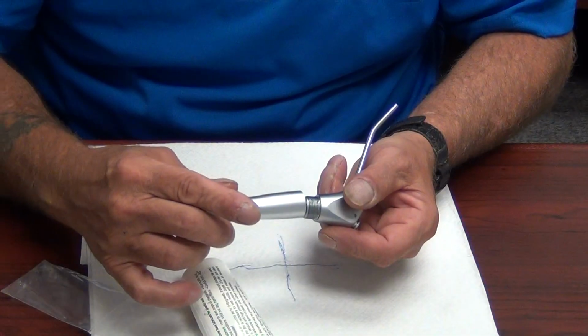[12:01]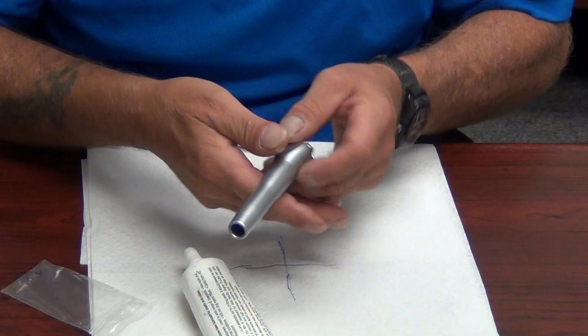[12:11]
Reinstall your tip. Now, ladies and gentlemen, I'm sure in the field I have run into it, and I'm sure you guys have too, where you cannot get the handle screwed off, where there's been some kind of galvanic reaction or chemical reaction where they use two light metals against each other. If you take a little O-ring lube or whatever you have and grease these threads before you screw the handle back on, you'll never have the problem of disassembling the syringe again. If it's you or the next guy that comes around, it will be a joy
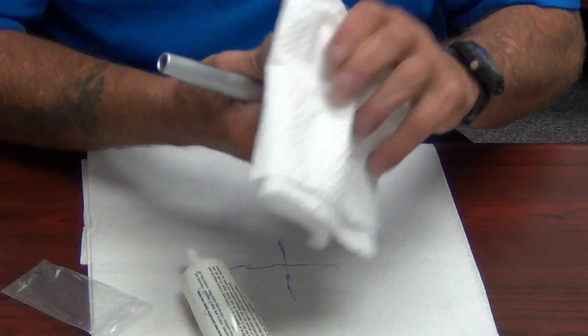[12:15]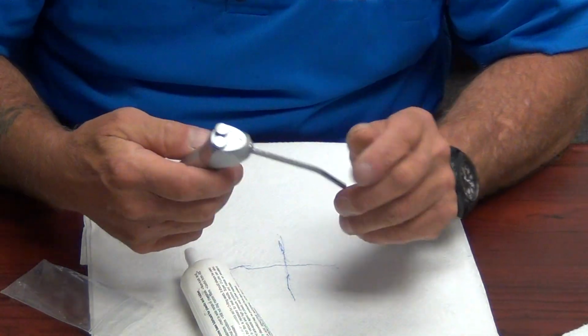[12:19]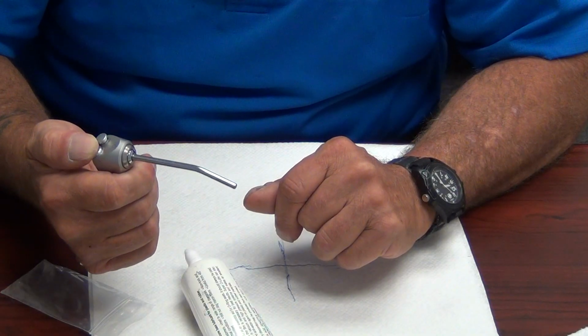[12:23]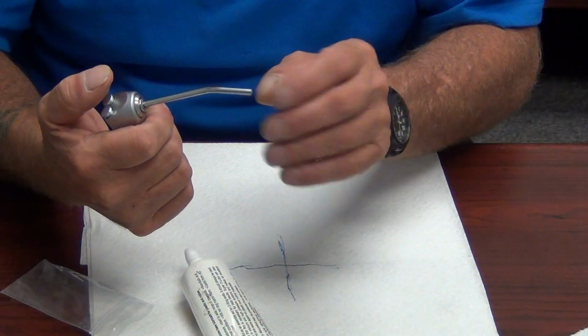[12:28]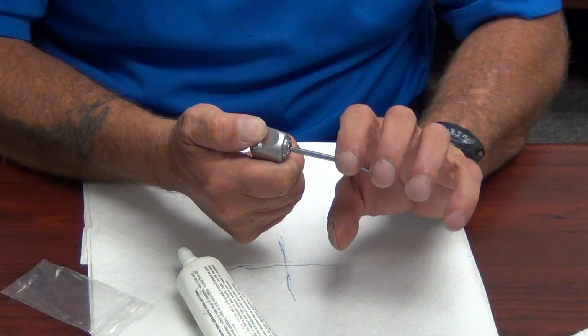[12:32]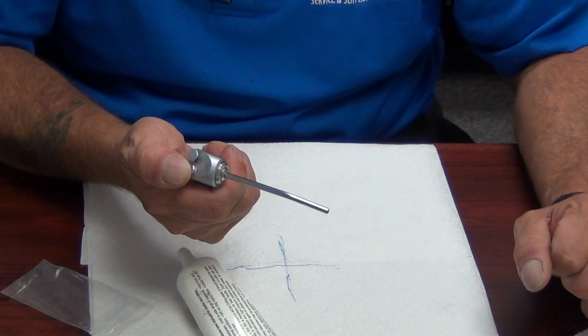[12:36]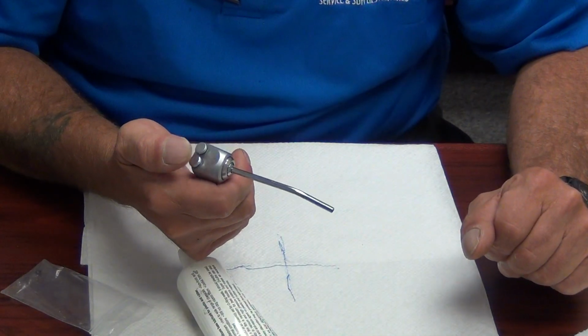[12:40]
to service the syringe. With that being done, you want to hit the air a couple of times, rapid succession. The water a couple of times, rapid succession. Make sure the water stops, make sure there's no drips. Hit both buttons simultaneously with your thumb to create a mist. Hence the term three-way syringe, by the way. Air, water, and mist. Three ways of operation. Press both buttons at one time to get a nice atomization or mist and test that.
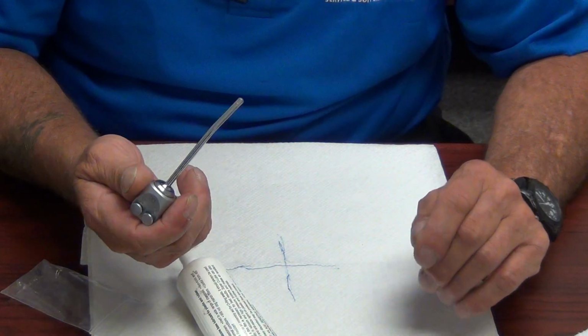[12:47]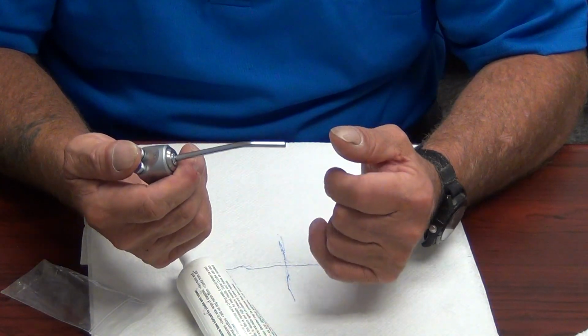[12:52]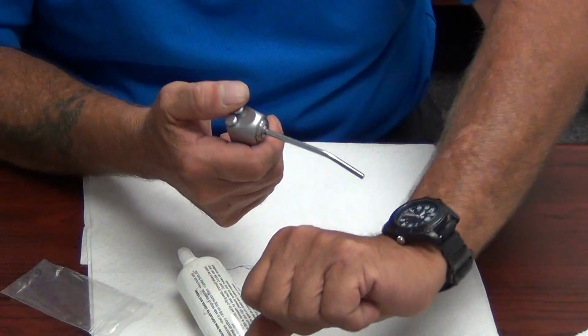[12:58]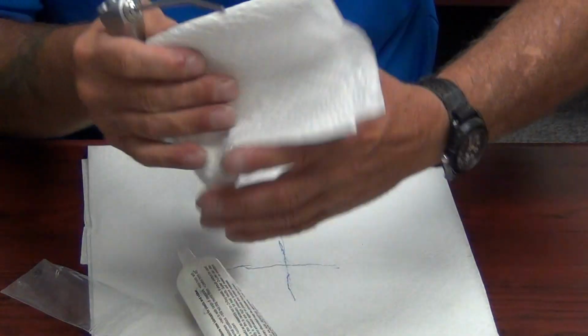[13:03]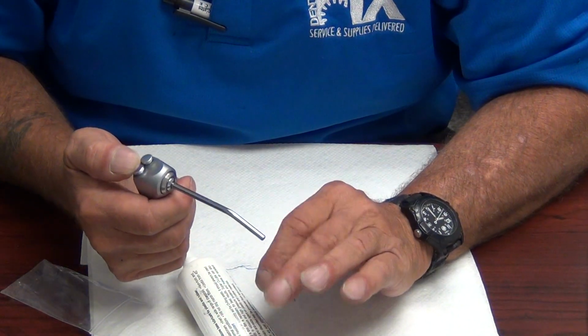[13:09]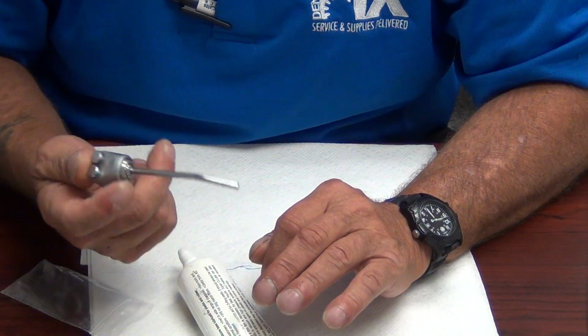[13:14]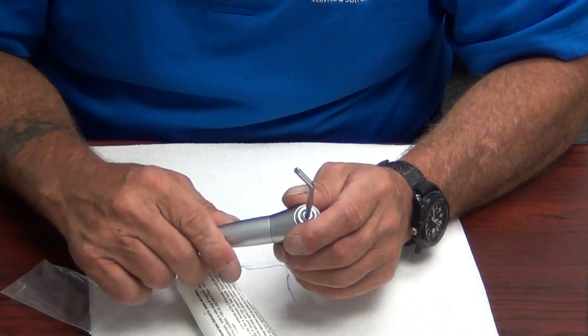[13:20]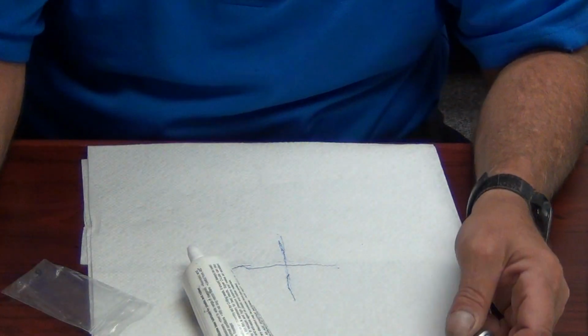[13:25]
Wait about 30 or 40 seconds with the syringe in the holder. Make sure you don't have any drips. Make sure you don't have any problems and you're good to go. One more test, excuse me, on your watch crystal: squirt water. Dry the water off. Then hit air only. You should only get air when you push the air button after your rebuild. That's going to be one of your main problems, is air in the water. It's all due to the O-rings and the tip holder and replacement of the tip holder. As usual, guys, if you have any questions regarding this syringe or any further questions, you can call Paul or
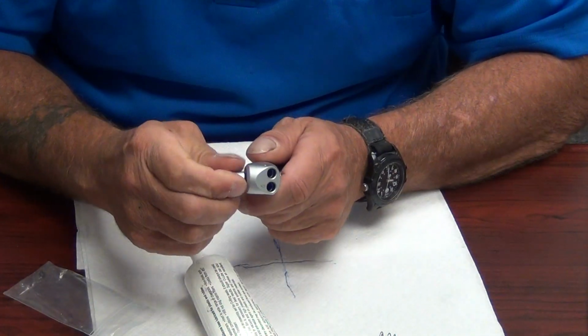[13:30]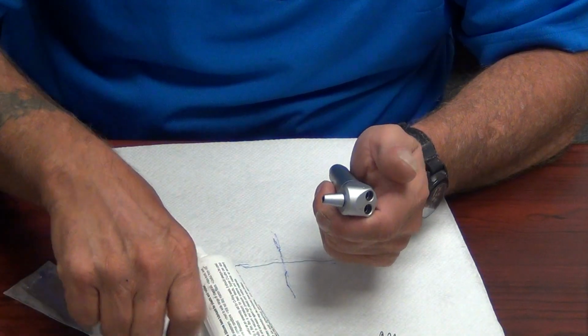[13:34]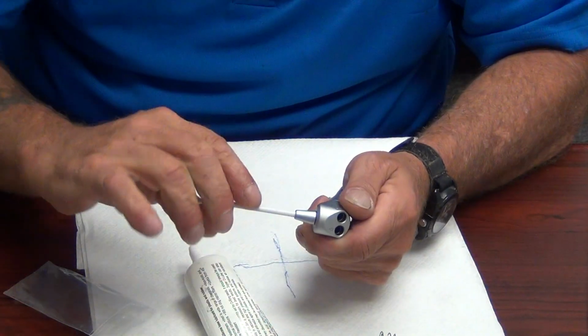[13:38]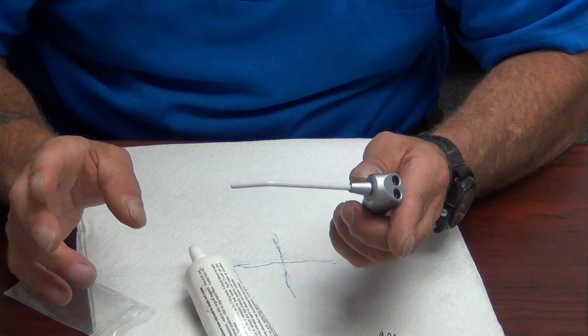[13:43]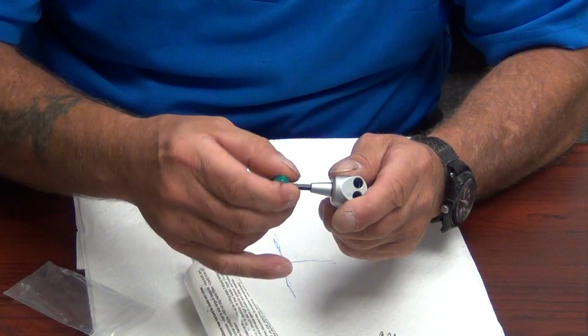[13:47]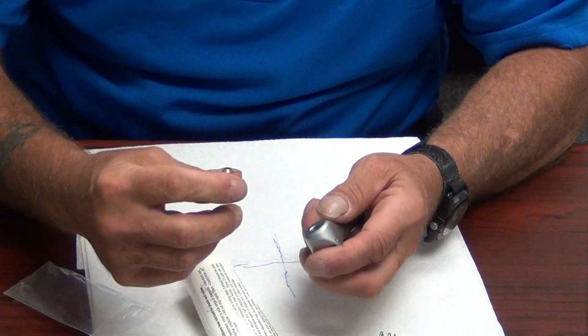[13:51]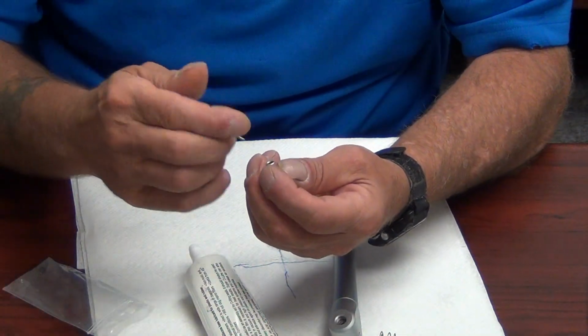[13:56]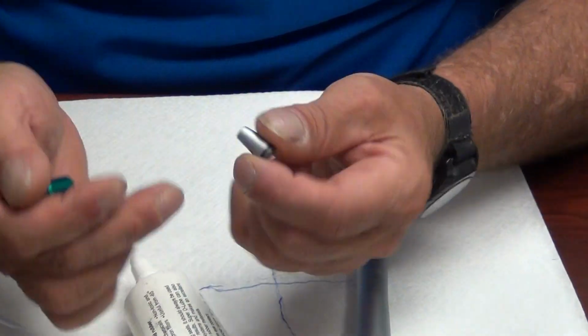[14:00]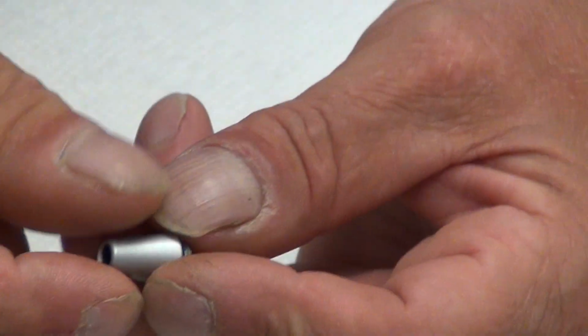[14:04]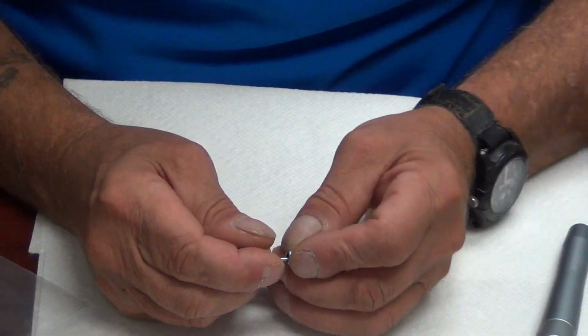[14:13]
myself. Let me take a moment to go briefly over another type of tip holder that you'll see predominantly on a Parts Warehouse syringe or a Beaver State syringe. It's a push tip holder like this. They're very easily serviced using the same syringe tool and the same O-ring. Unscrew the tip holder. It comes in 2 parts. Push it out like this. There will be 1 or 2 O-rings in the tip holder itself to replace.
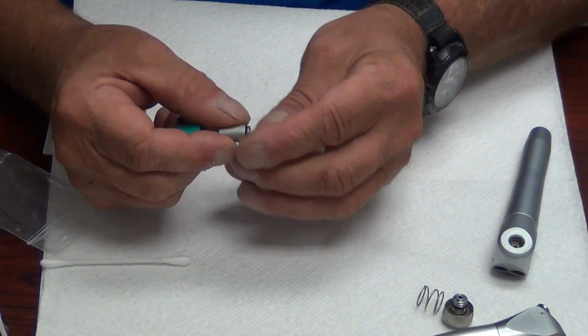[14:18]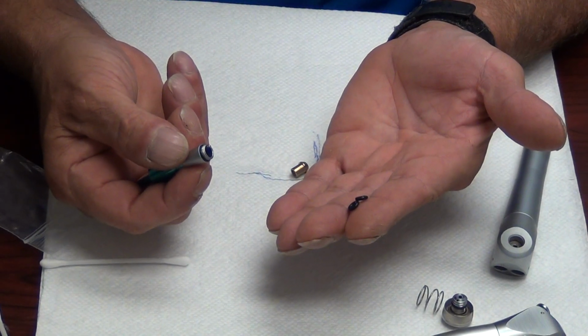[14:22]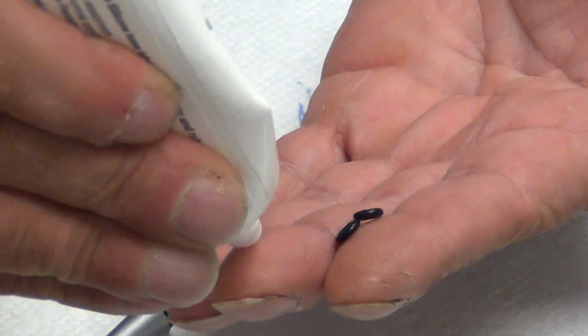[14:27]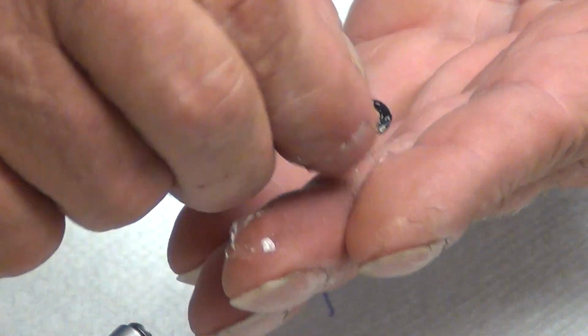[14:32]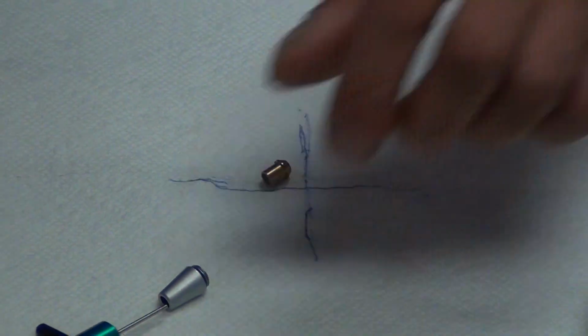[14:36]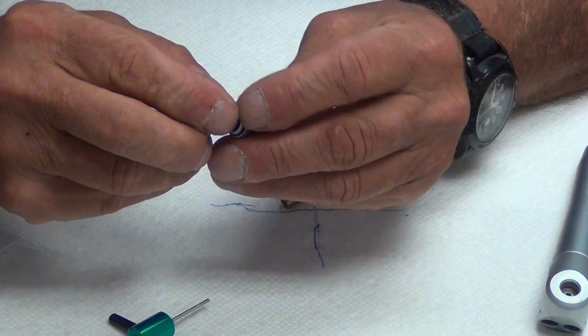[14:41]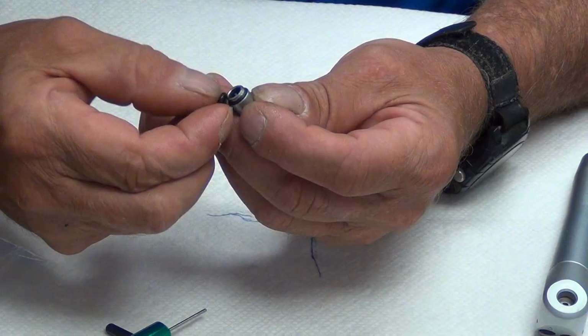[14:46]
You don't have to order a whole new tip holder for this, guys. See the 2 O-rings that have come out from the inside? You can replace these O-rings easily. They're available in your DCI O-ring kit. So there's no need to order a syringe kit for this one. And you can goop these with lube, okay? You can put as much lube as you want on them. Reset them back in the syringe cone in the tip holder in the order in which they came out. They're both the same size, so it's pretty much impossible to get them crossed up.
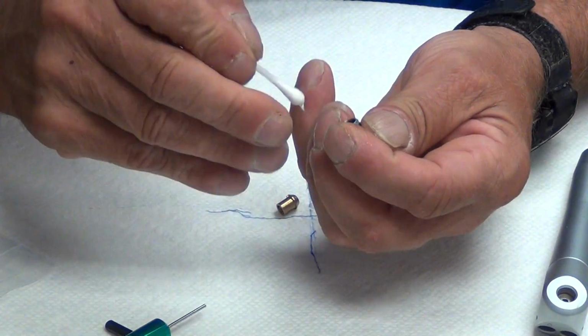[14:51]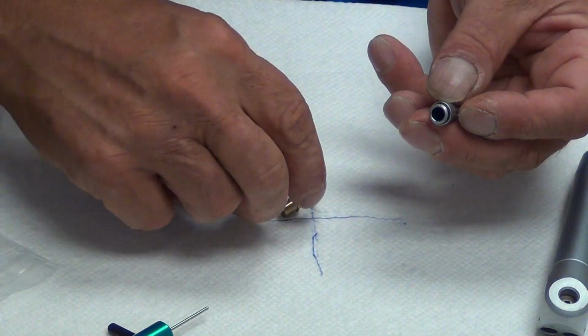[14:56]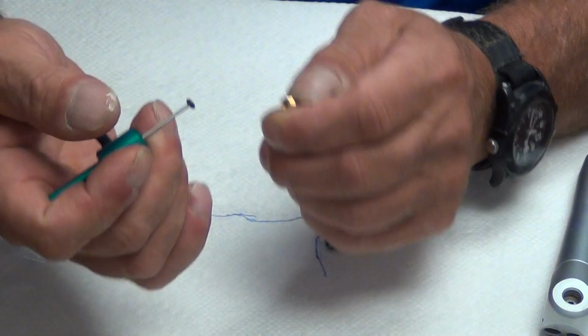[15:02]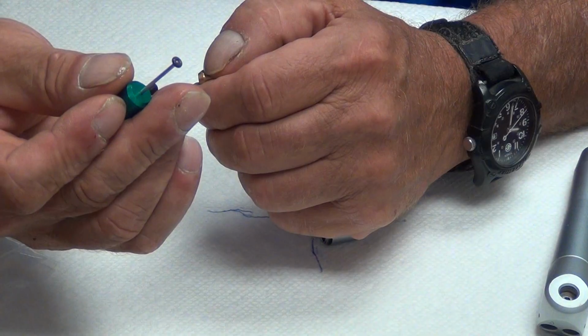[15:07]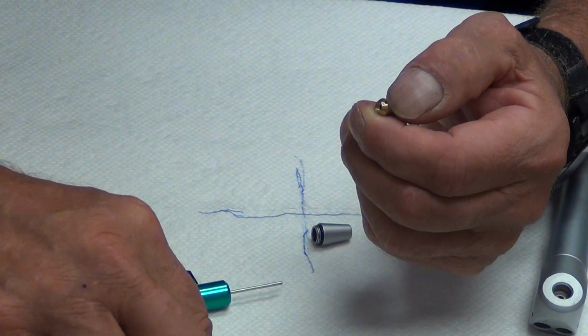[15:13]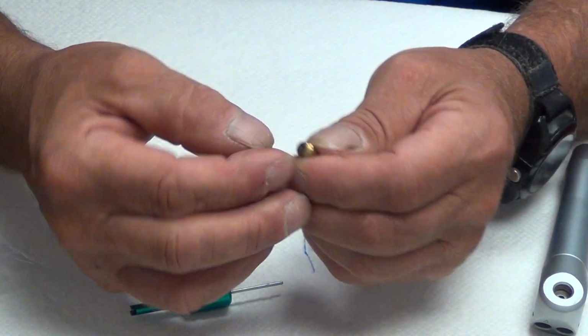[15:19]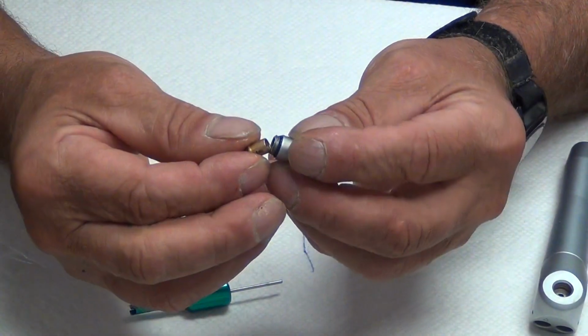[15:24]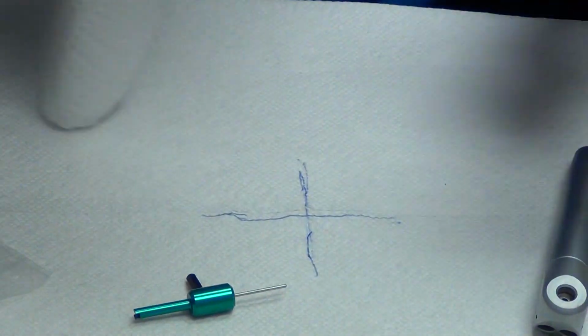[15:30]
Take a Q-tip or something, seat them thoroughly. Make sure they seat up to the top of the cone. Now, on your ferrule, you have a small O-ring. You can match this O-ring up in your DCI O-ring kit. This is really the most important O-ring on this type of tip retainer or tip holder. We're going to put a little bit of lube on it, stick it back up in our ferrule, make sure it flushes out good, which it does. Reinstall it in our syringe tip, like so, in our tip holder, like so, making sure it's pushed in all the way.
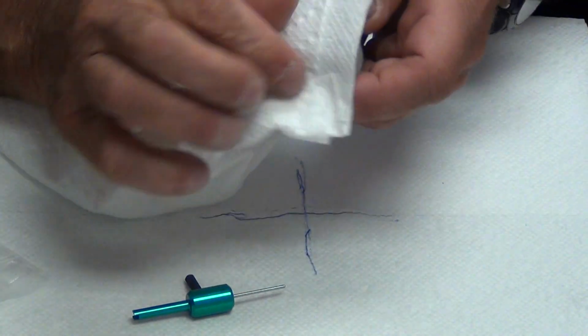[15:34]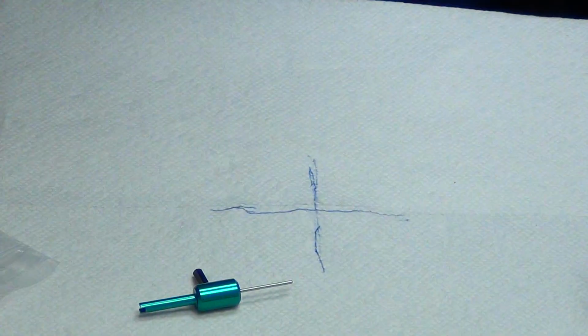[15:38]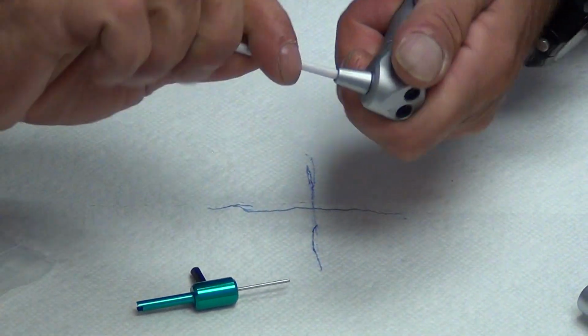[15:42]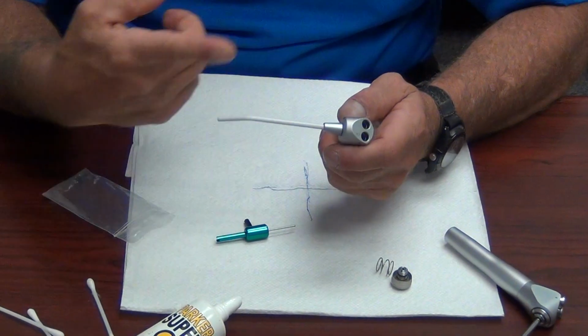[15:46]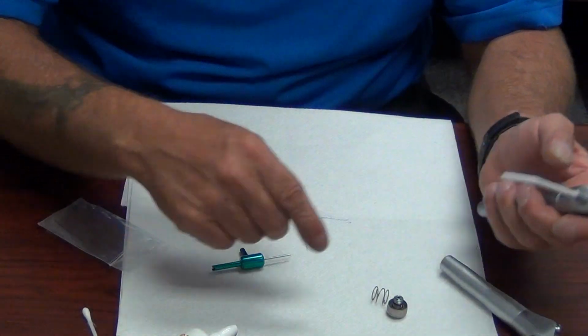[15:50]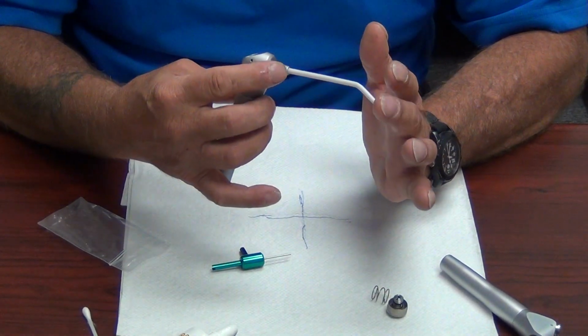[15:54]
And we'll screw it back into our syringe head. And give it a test, make sure that we're okay. And we are. Remember, with any syringe tip, after you insert, you want to swivel 360 degrees to help seat the O-rings into the notch in the syringe tip. And that concludes this style syringe tip holder. The buttons are the same. It's just a different style holder.
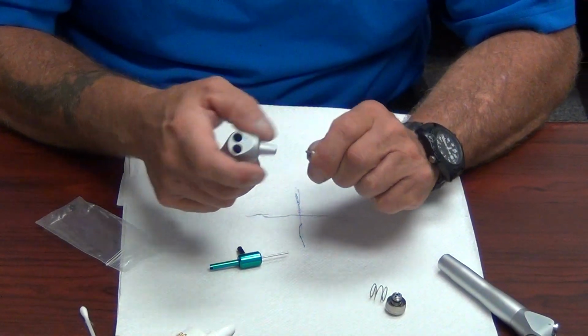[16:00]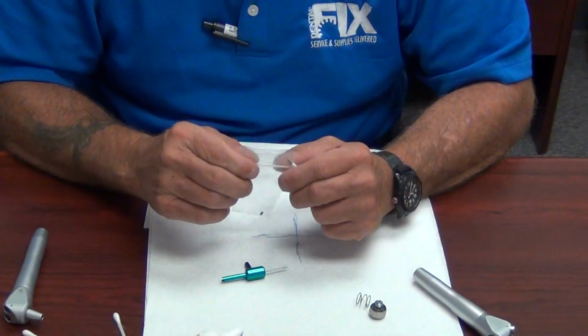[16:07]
Again, I stress, guys, this is a pretty good clean way to make a couple of bucks, and it's a good way to get into the doctor's office, because not every technician in the world is good with a syringe. And let me stress again, if you repair this syringe, you will endear yourself to your account, and you'll make yourself indispensable. Anybody can go in and sell a syringe. It takes a technician to repair one.